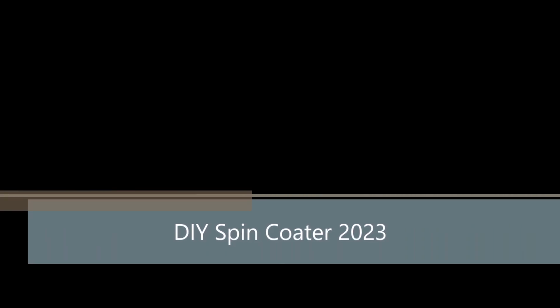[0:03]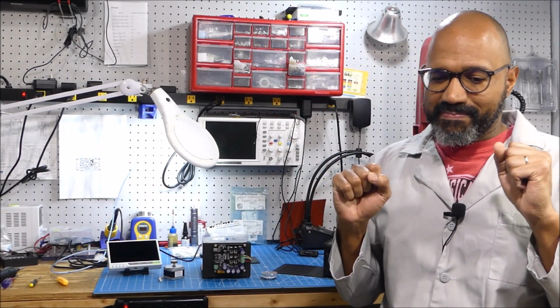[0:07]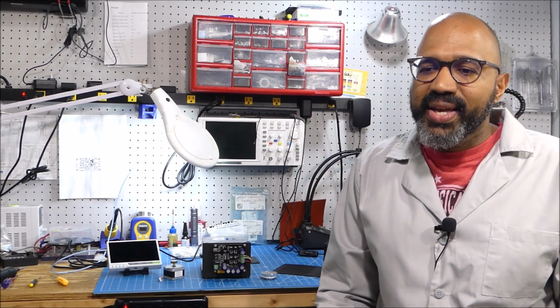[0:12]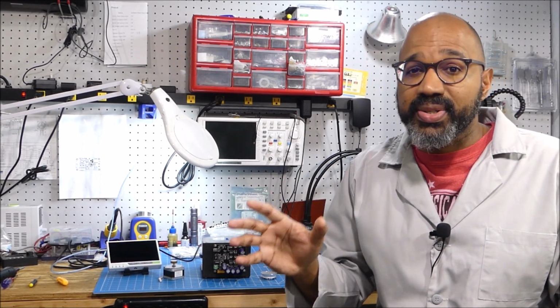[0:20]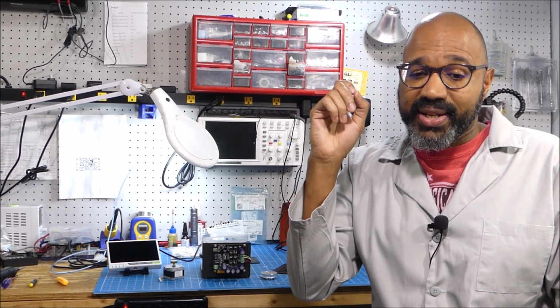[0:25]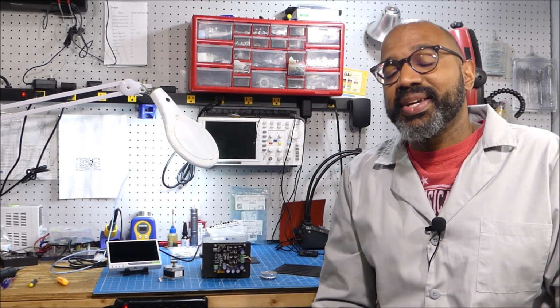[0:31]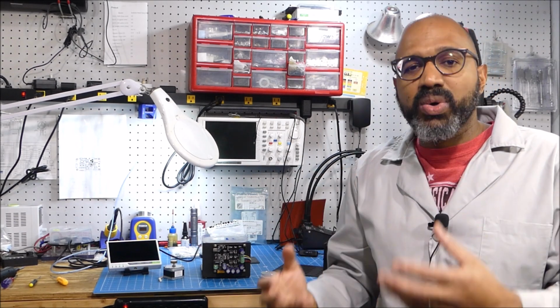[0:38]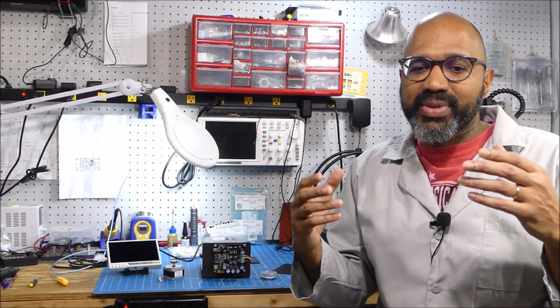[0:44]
Today we want to talk about DIY spin coaters. The last few years there have been several articles that talk about building your own spin coater with various off-the-shelf components, and for the most part, we looked at them and they all work. Their designs are reasonable. However, in our opinion, they're a little bit too complicated for what they want to do. Because if you're doing a DIY spin coater, your goal is just to be able to spin coat something quickly and not really focus on how it looks and whether it will function up to a commercial spin coater.
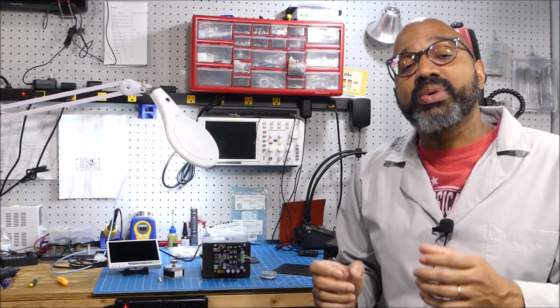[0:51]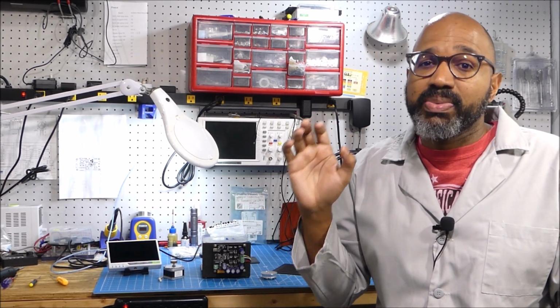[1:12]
And so this video has been put together to show you how to build one of these spin coaters with minimal fabrication effort, no programming, and using components you probably have in-house already, or you could easily purchase from Amazon or eBay. All right, first off, what should be the primary goal of these DIY spin coaters?
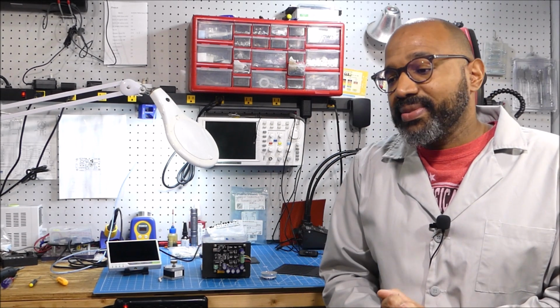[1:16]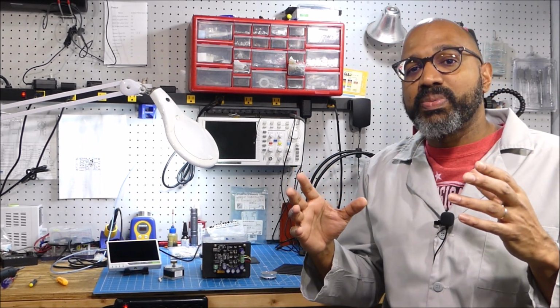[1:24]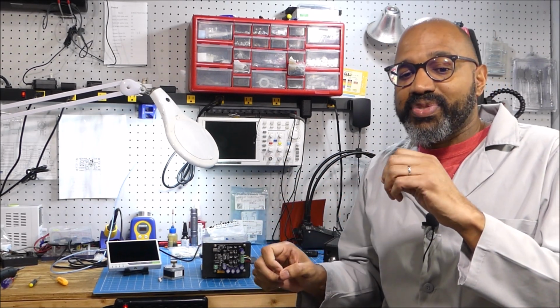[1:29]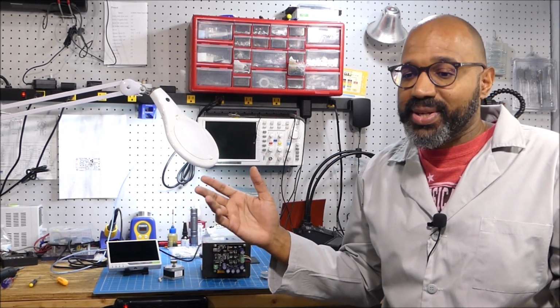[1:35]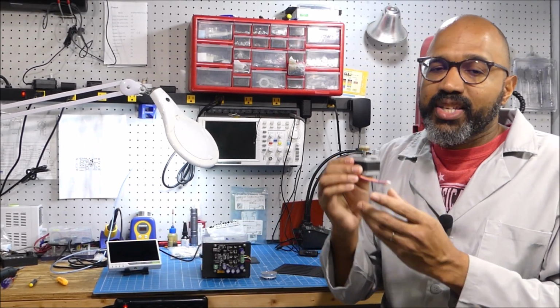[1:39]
Number one, safety. So that being said, you don't want to build something that's using AC voltage directly. And secondly, you want to have some way to keep the sample that's spinning from flying off into the room, in case, because it is going to happen at some point. So our design is going to focus on using these high-speed stepper motors.
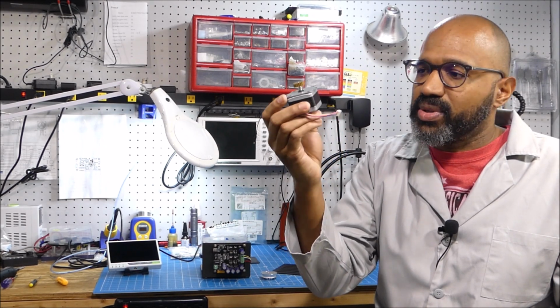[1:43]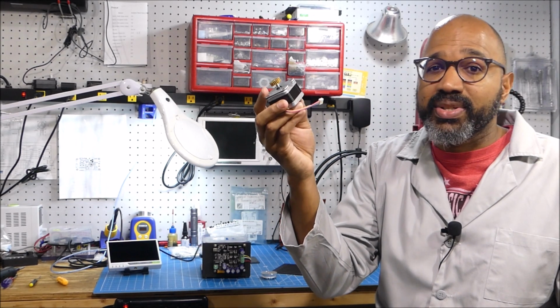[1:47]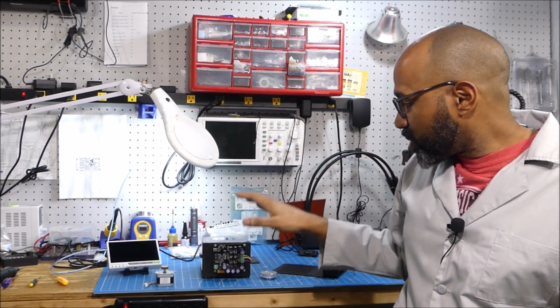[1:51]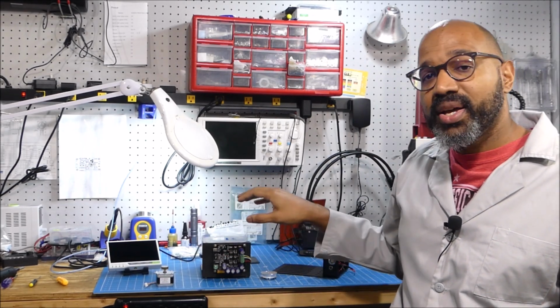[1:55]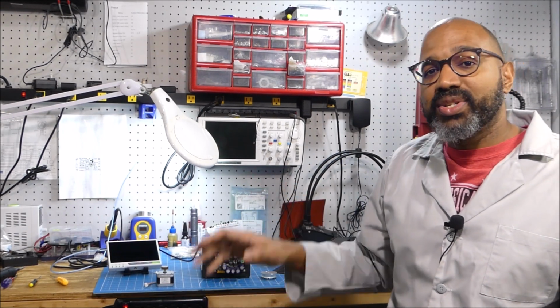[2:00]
You could get these off eBay. I did a search and there are quite a few options here, fairly inexpensive, between $10 and $20. Then you're going to have this computer-controlled stepper motor driver. That's from Phidgets. I would highly recommend this board. Works very well. And lastly, you need some kind of base.
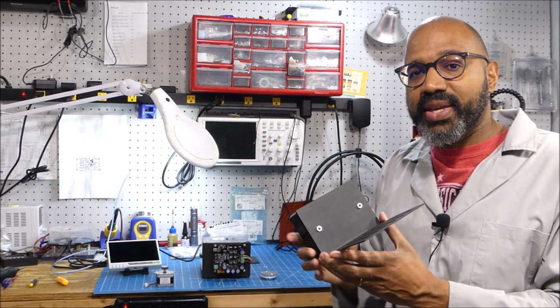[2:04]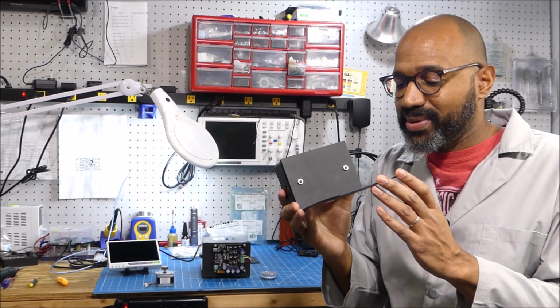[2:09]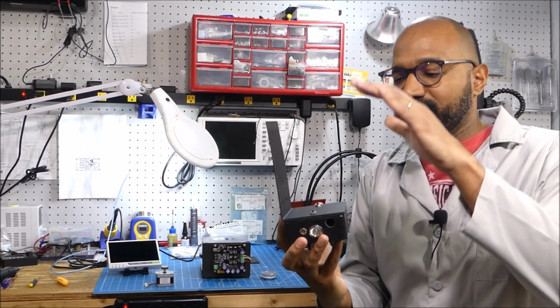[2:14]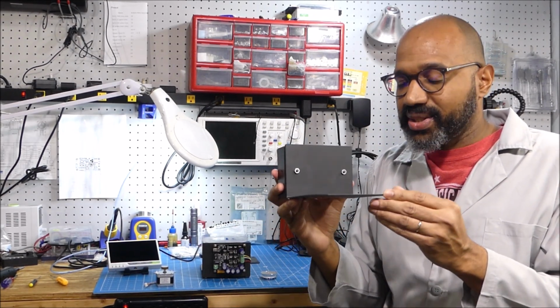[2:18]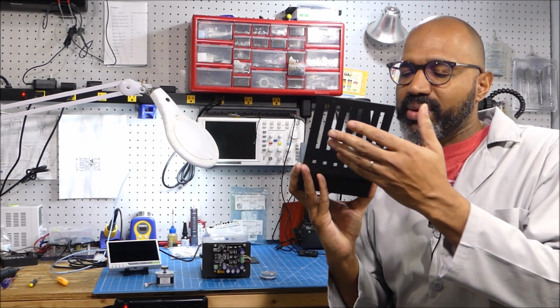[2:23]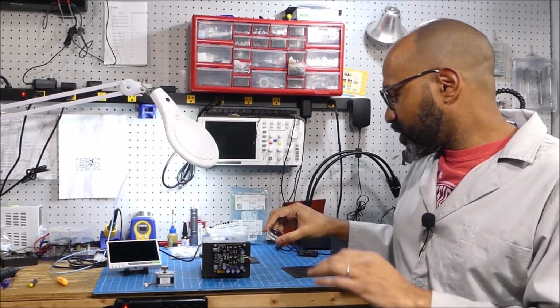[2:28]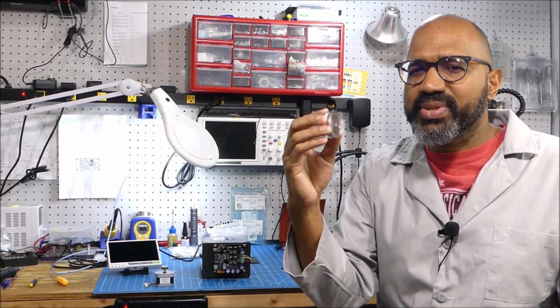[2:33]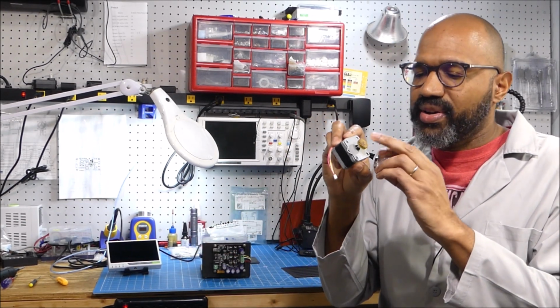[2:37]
This base comes from Amazon, and it's not really a base for spin coaters, obviously. What it is, it's a bookend. So you put the books here, but it's great. It's steel, so it has a little weight to it. And more importantly, it has this slot, so we don't have to drill that many holes in there. And the third thing you need is a chuck to place your sample on. Again, this is a commercial product that comes from Amazon, it's for pulleys. And the good thing is, it's designed to fit these 5mm shafts.
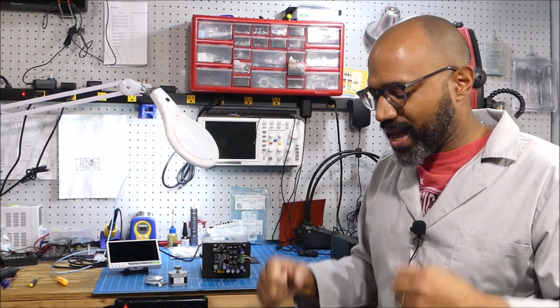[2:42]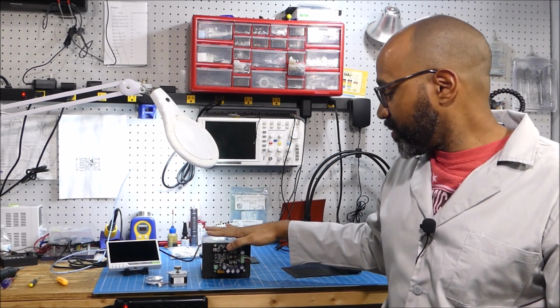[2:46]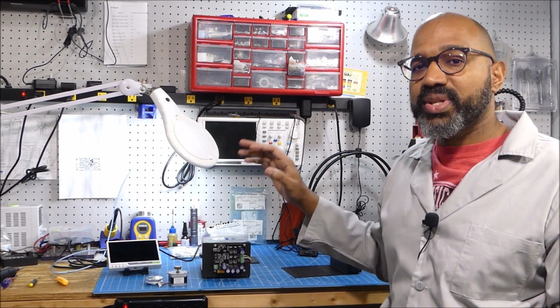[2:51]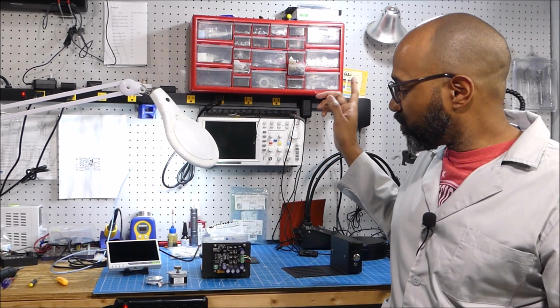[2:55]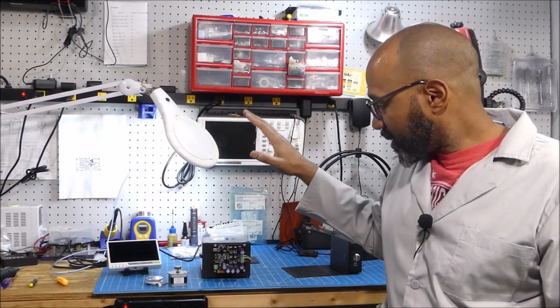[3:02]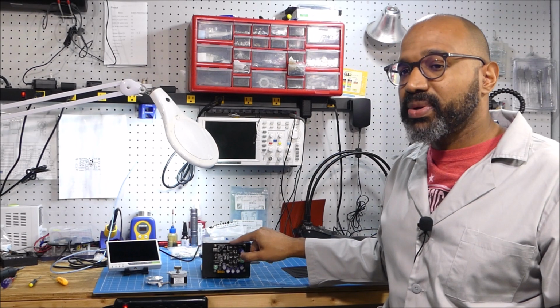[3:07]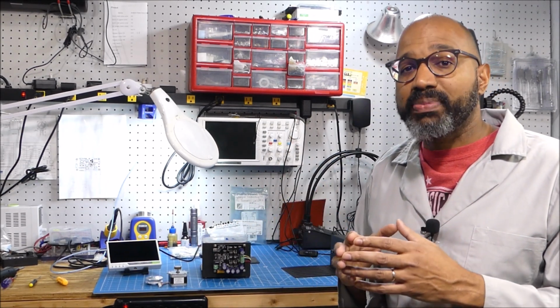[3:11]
Let's talk about the performance of the one we built. This spins from about 10 RPM all the way up to 6,000 or 7,000 RPM using this driver board and a 24-volt power supply. And you could also change the acceleration and so forth. As we said, this is a computer-controlled board, so you definitely need a computer. But if you're like us, you probably have a spare laptop lying around anyway.
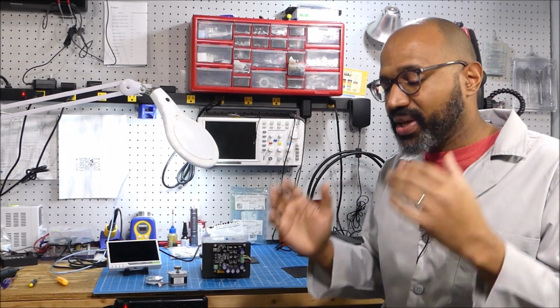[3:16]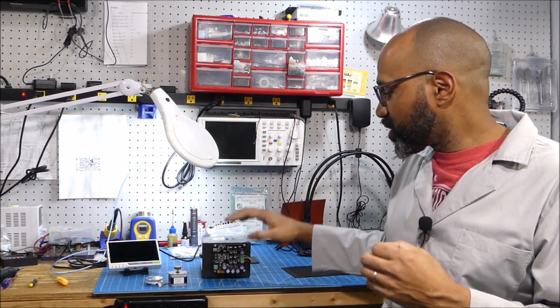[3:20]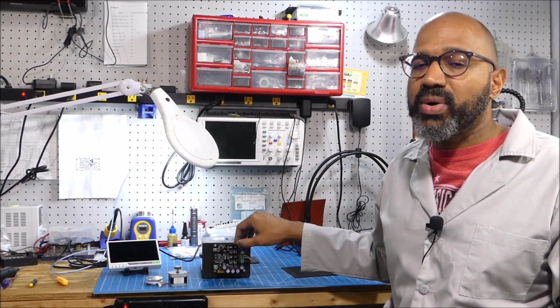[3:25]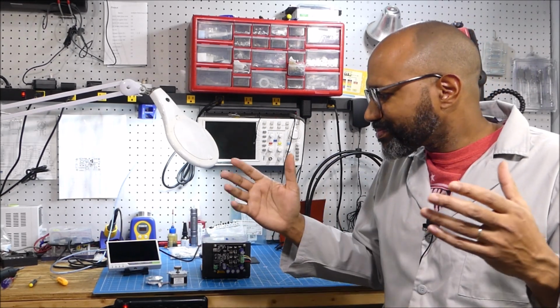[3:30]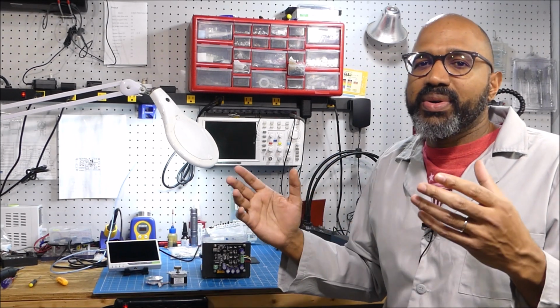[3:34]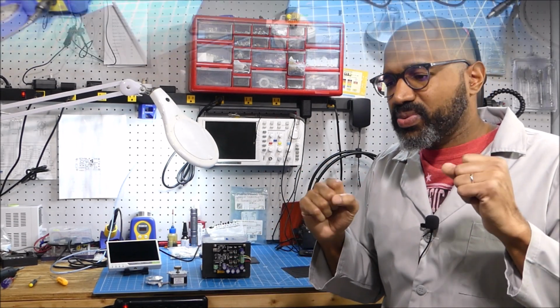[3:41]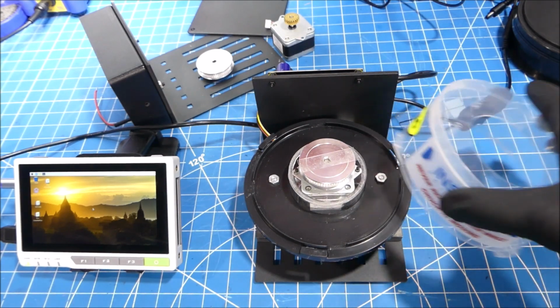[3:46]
So do you have to write your own program? No, we're going to put a link in the video to the source code, a program we wrote for this, because we evaluated this board some years ago to see if we wanted to use it in our own spin coater kits. It turns out it would be overkill for what we wanted to do. But we did write the software, and the software does work pretty well, and that's what we're going to take a look at. Okay, so first and foremost, let's see what we got with the spin coater itself.
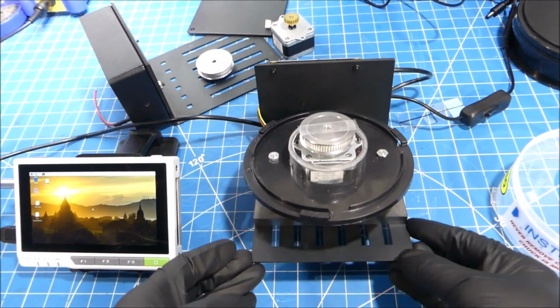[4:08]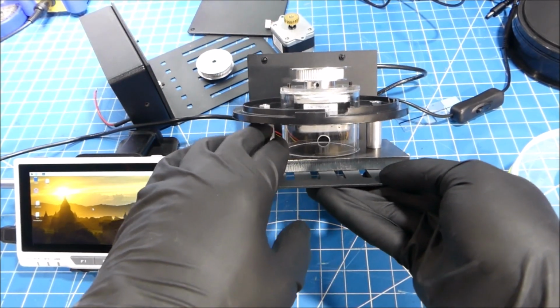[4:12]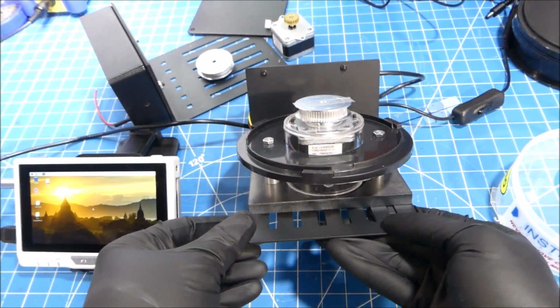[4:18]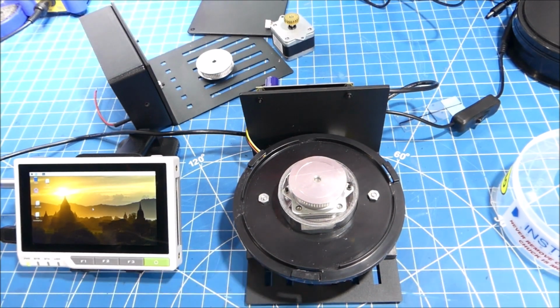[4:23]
As I said, the base here is just a bookend from Amazon, and after that you have a mount for the stepper motor. In this kit, we use what we use in our spin coater kits, a plexiglass tubing, so it keeps the motor nice and protected. And below that, you can see we have these two standoffs and a heavy steel plate to make sure everything's weighted down and the sample's not moving around when you're spin coating. And of course, we mounted the controller in the back of this. However, we would recommend you put it in an enclosure box, with the stepper motor driver inside of it, to protect it from any chemical spills or anything like that.
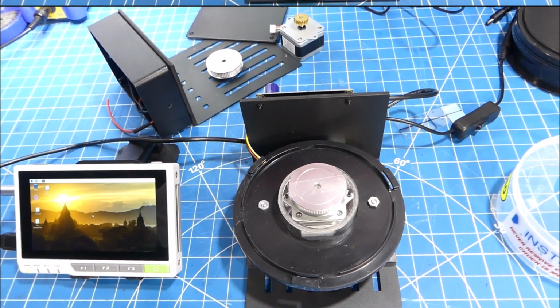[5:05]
All right, next, the control computer. In this case, we're using a reTerminal from Seeed Studio. It's a little Raspberry Pi device, and we like it. It's really compact for this type of control. However, I'm guessing you have a laptop lying around, so our software will run just as well on the laptop itself. So this was just convenient. We had it in-house and we decided to use it.
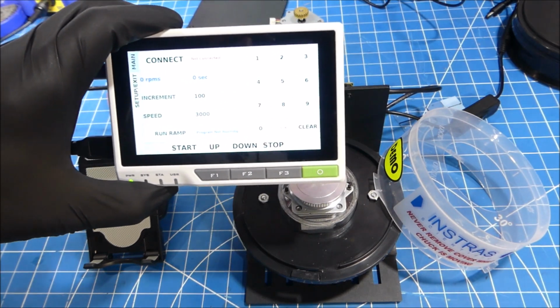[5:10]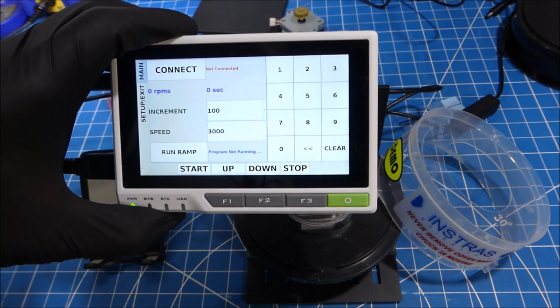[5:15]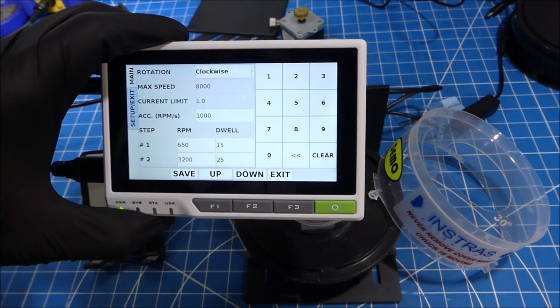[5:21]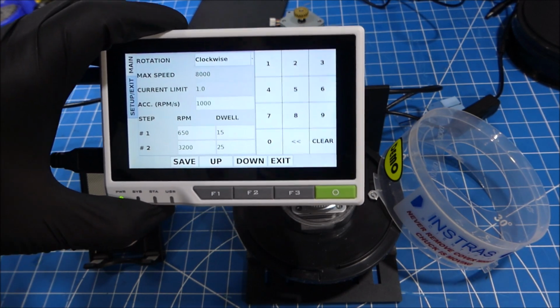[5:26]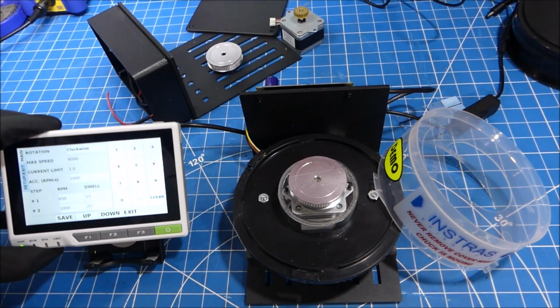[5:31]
All right, so the control software is pretty basic. You just have the ability to set your speed, and then set the acceleration, and we have the ability to do a basic two-step sequence, so you have a low speed and a high speed setting. But again, you can write your own control software pretty easily. This is just what we did for testing purposes. So let's see how well the motor works with the control software. First thing, we connect to the board and make sure that everything is powered on, and then we hit start.
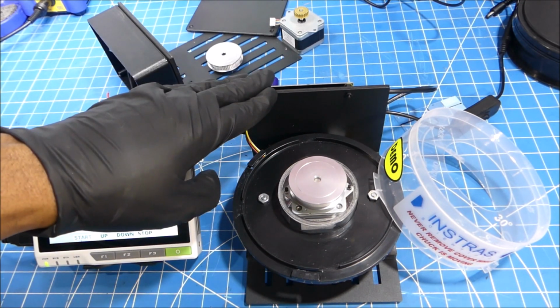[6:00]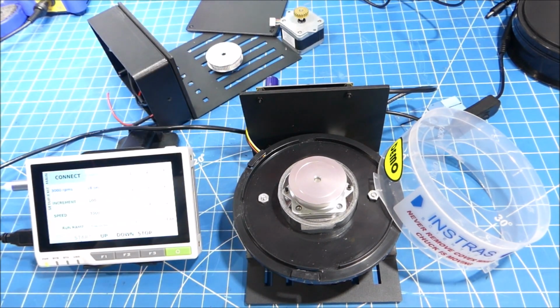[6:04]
We set an acceleration of 1000 RPM per second, so it took 3 seconds, so we know that this is being done correctly. And that's another thing we like about this board, it does all the hard work of figuring out how to make the motor accelerate correctly. All right, let's stop this and try the ramp sequence. So you're at low speed. All right, now we're at the high speed setting.
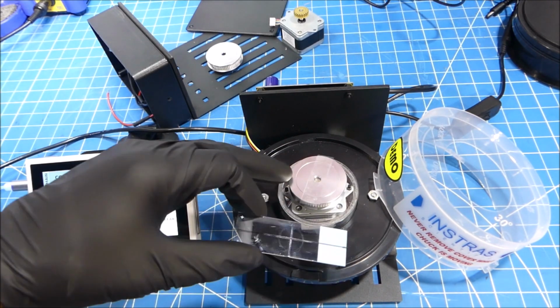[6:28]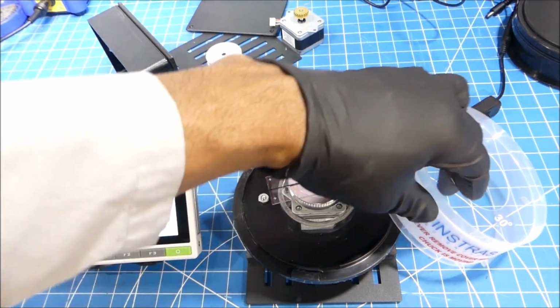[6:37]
But I'm guessing you're probably going to be using glass slides. So how do you hold the glass slides on there? Nothing fancy, double-sided sticky tape works pretty well. And there's no reason to do anything more complicated at this point. So put that on there.
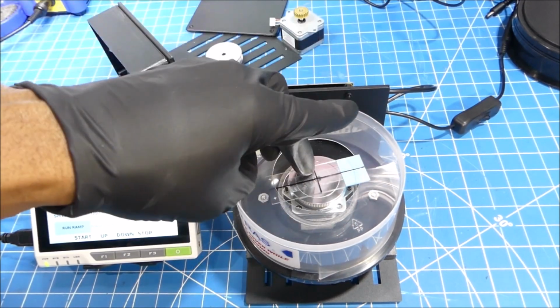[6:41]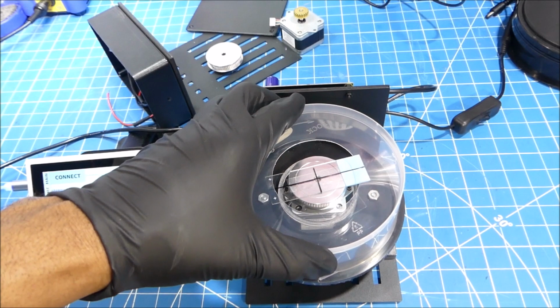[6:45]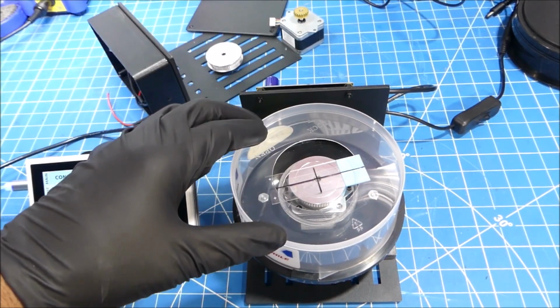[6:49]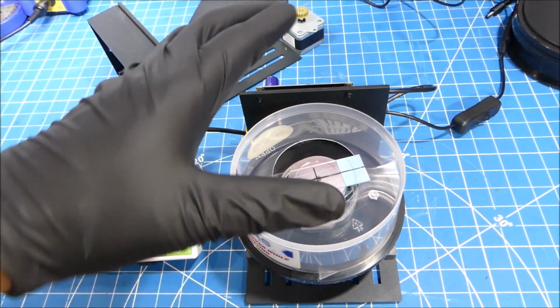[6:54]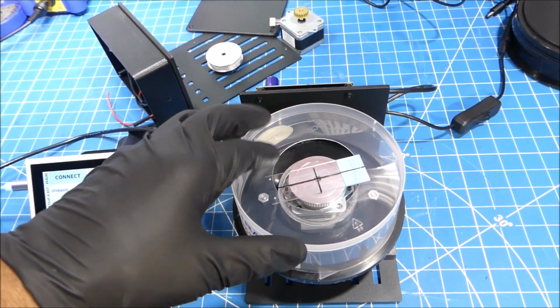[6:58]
And again, safety, make sure you're always enclosing the sample that's spinning around in something. Now we found the CD cake box has worked pretty well because they're easy to machine and they're relatively inexpensive. So you could just buy like 10 of them, just have them around for when they get destroyed by any kind of chemicals. And yeah, they're pretty robust.
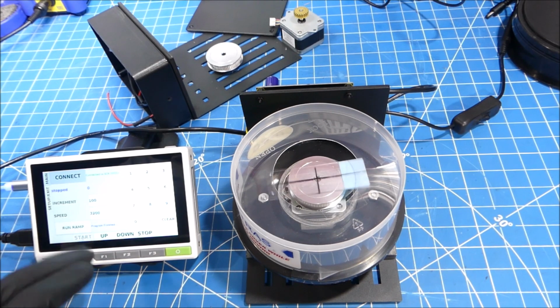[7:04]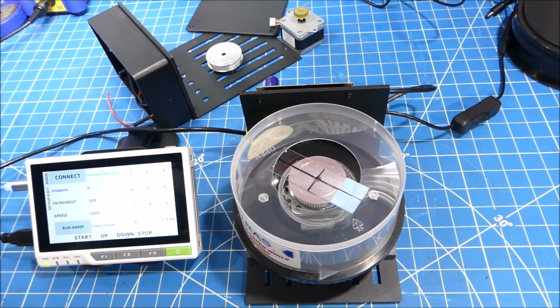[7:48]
So here it is, a very straightforward approach to building your own spin coater.